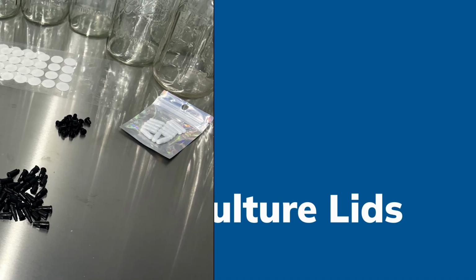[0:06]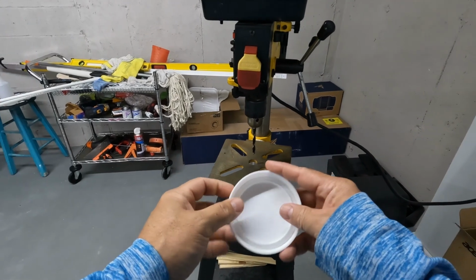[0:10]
We're going to be doing some liquid culture lids. These are all the materials you're going to be needing. I will include those in the description.
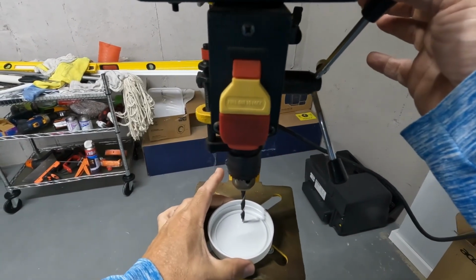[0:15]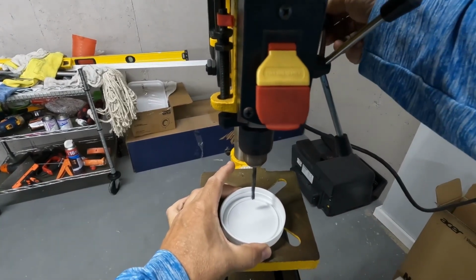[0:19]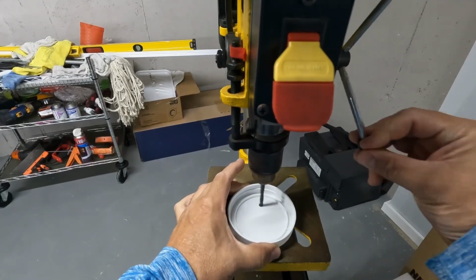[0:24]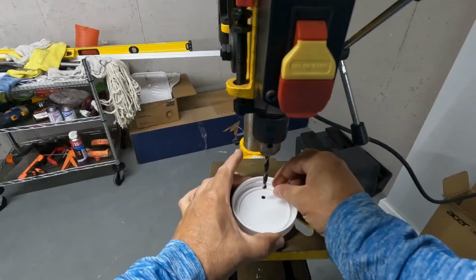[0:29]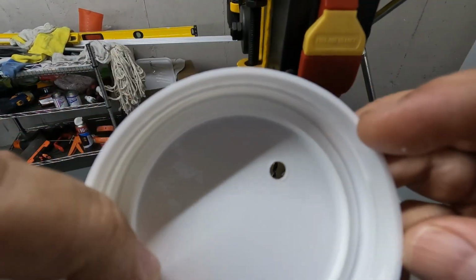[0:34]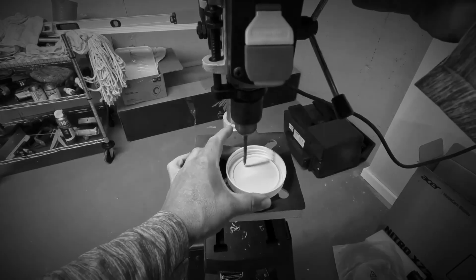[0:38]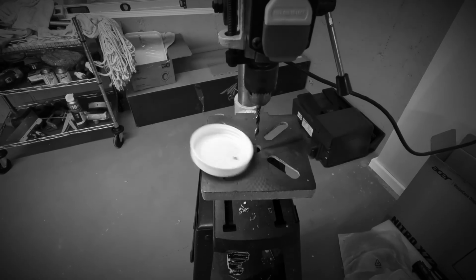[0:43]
We start by drilling the bigger holes, which are going to be for the injection port and for the little filter pad. We don't need a bench drill press to do this. You can do it with a regular hand drill. We just have this one here on site, so it makes it a lot easier. Always make sure that you, in between, inspect everything and remove any debris so you don't get anything in the way, especially because it's plastic. And make sure that you have a good grip on the piece, whether it's a manual or bench drill.
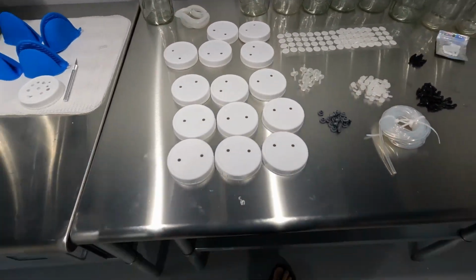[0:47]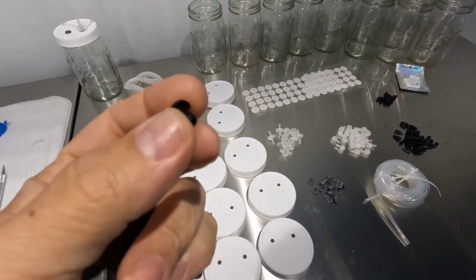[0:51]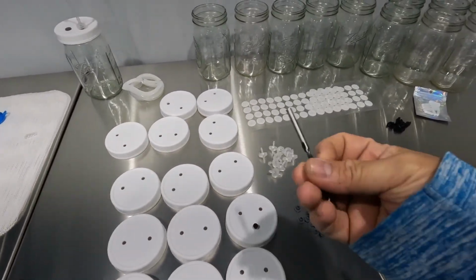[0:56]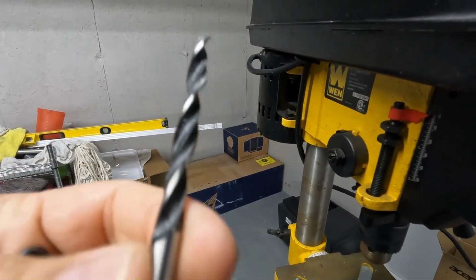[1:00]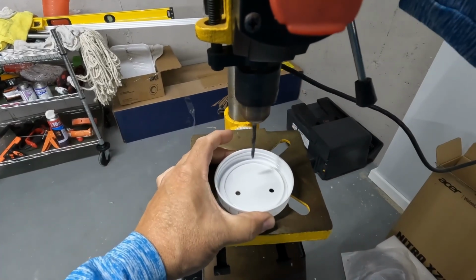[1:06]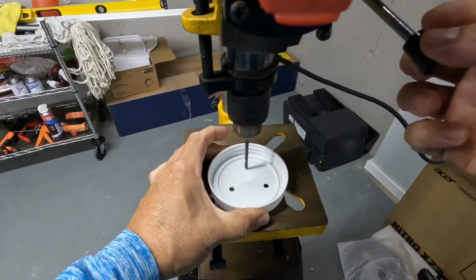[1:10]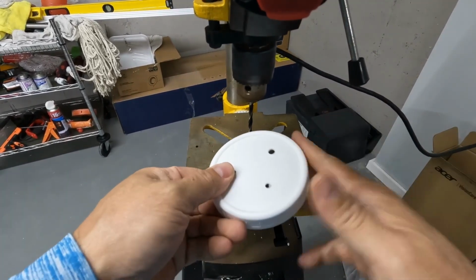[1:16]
With them all completed with the bigger holes, now we have to change our drill bit. We're going to do the one for the grommets that are used for the little valve we're going to put in the way. So we use two drill bits in the whole project. One is going to be for the filter pads and the other one for the line itself. I tend to put those in a kind of triangle configuration so that we have some separation between them. That's really just a matter of preference.
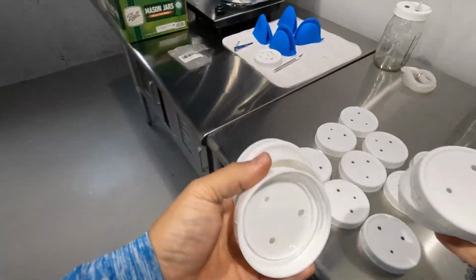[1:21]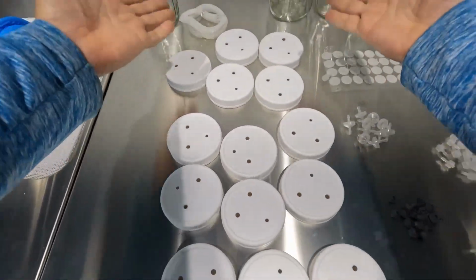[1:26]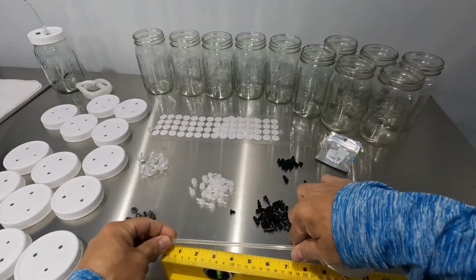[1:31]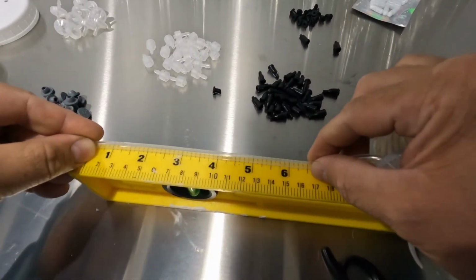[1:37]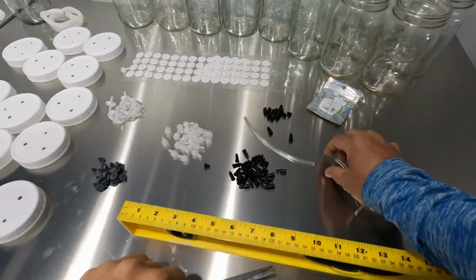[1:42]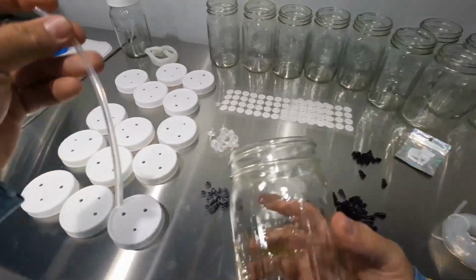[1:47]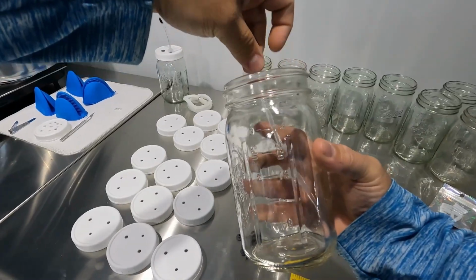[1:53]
Then, with them completed, we can now start doing the assembly process. We have all of our parts. I tend to put all the pieces on one table and then just assemble there. The hose that we use is heat resistant. It's a silicone hose, and I cut this piece about 6.5 inches. That allows us to connect to the lid and have enough to go to the bottom of the jar, without having too much slack and actually plugging itself, right? That you have too much slack on the bottom.
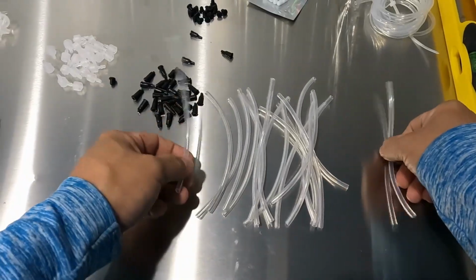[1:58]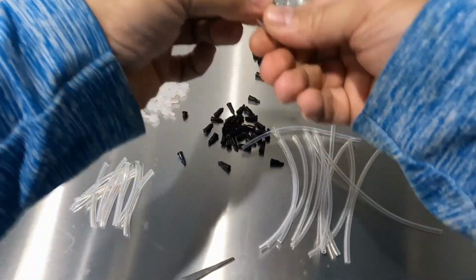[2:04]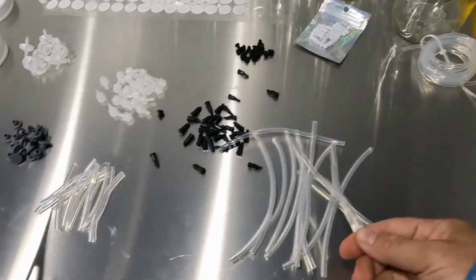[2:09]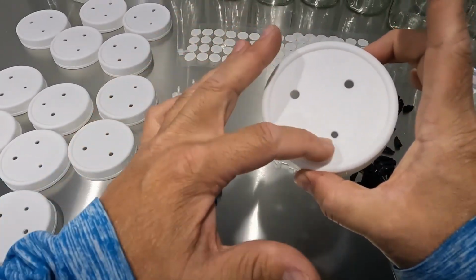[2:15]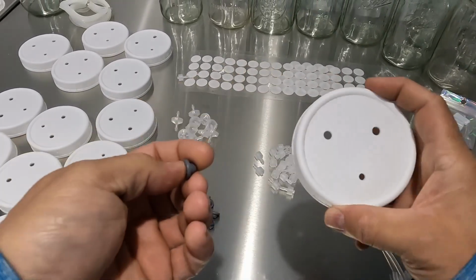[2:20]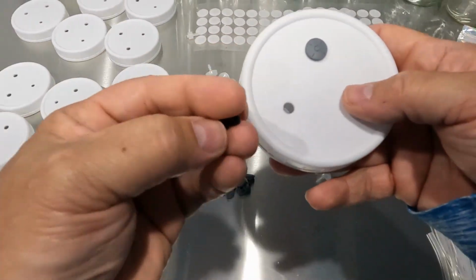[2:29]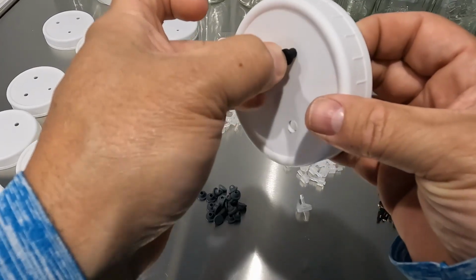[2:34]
Those same pieces that we use for the lid on the inside, if we cut them in half, I think they're a really good size to then use for the piece that's going to be on the outside of the lid. That's the part that is going to have our Luer lock adapter to actually connect syringes onto. So now you can see these are self-healing injection ports. And again, I'll put all the links in the description. So with a lot of patience, you can go through all of those and put all the grommets in there. The filter patch will be the next one. I leave the filter patch to the very end as I'm working and touching things. Those are a little bit more delicate.
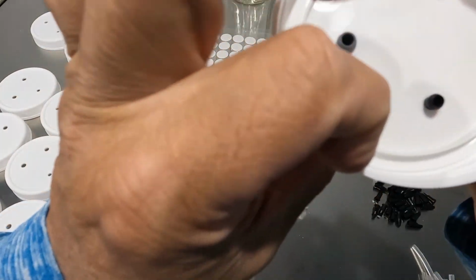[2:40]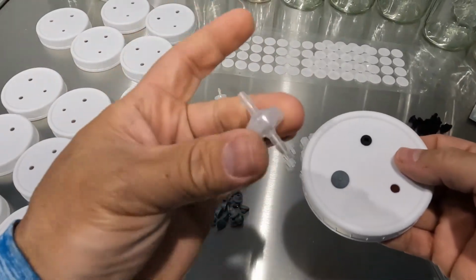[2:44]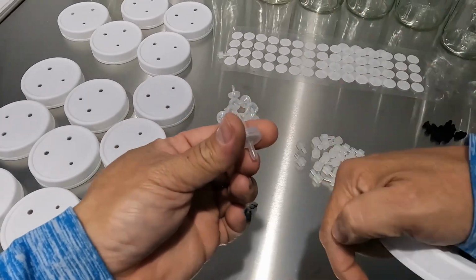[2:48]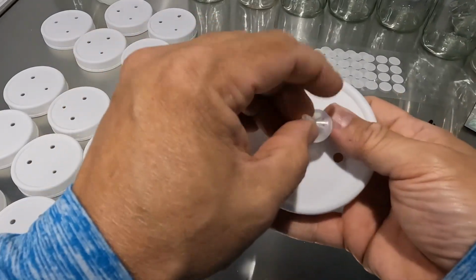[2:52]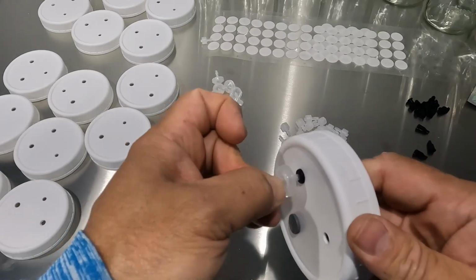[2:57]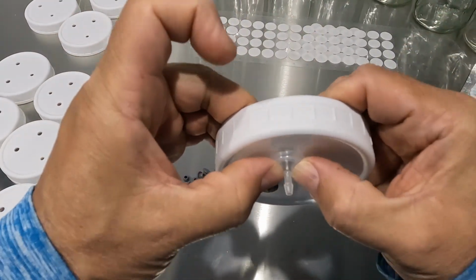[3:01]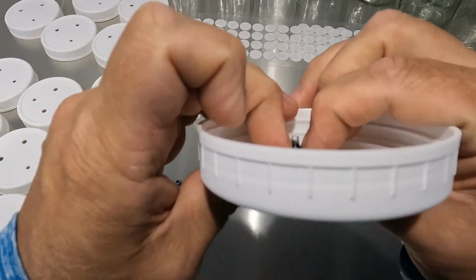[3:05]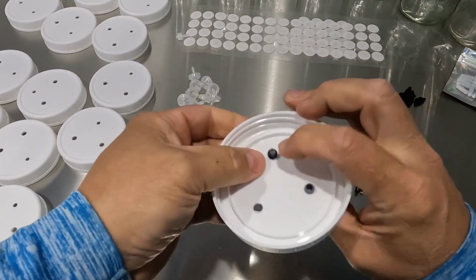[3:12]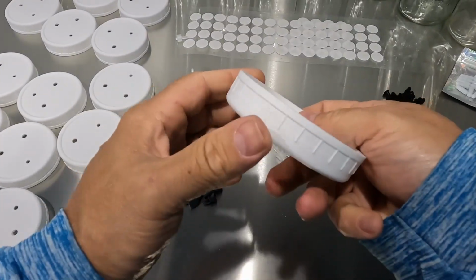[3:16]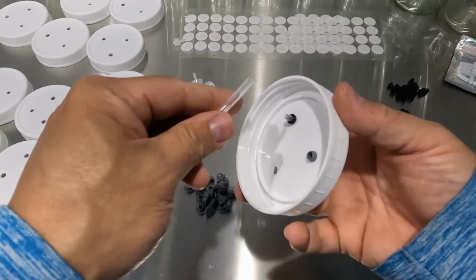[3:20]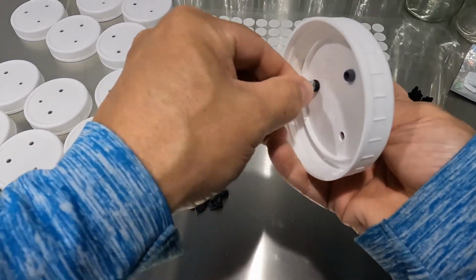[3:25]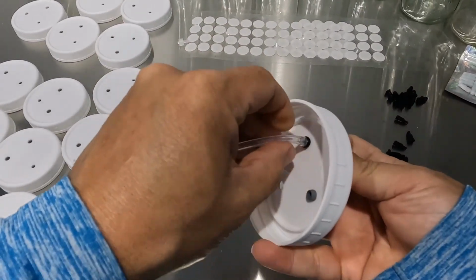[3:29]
And then the next piece is going to be that one-way piece that allows liquid to go out, but nothing to go in. If you insert those right there through the grommet, it's a really nice snug fit. And then on the inside, you'll see that you have a little bit of a sleeve that is created by the grommet itself. And we're going to pull that back, and that's actually going to serve a purpose. It's going to further seal that grommet in place on the inside. So now when we take our piece of silicone hose and put it on the inside, it's going to push that back and create a really nice seal.
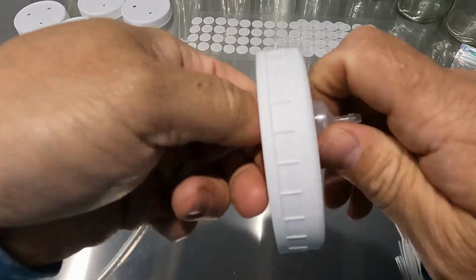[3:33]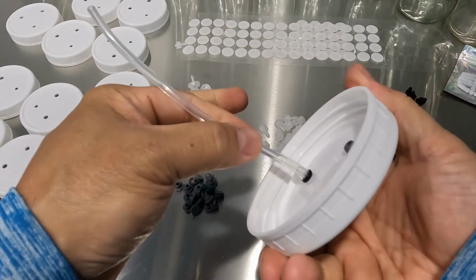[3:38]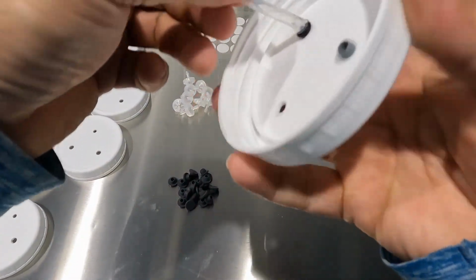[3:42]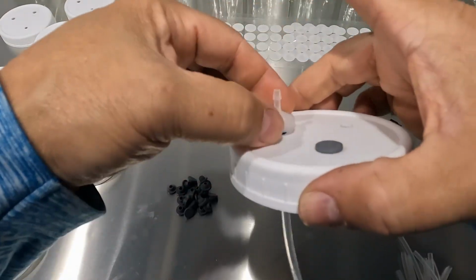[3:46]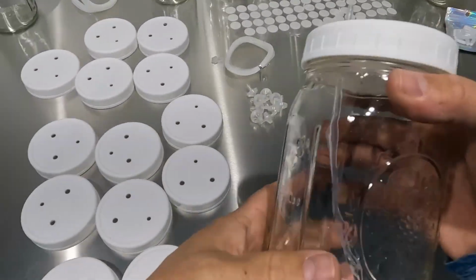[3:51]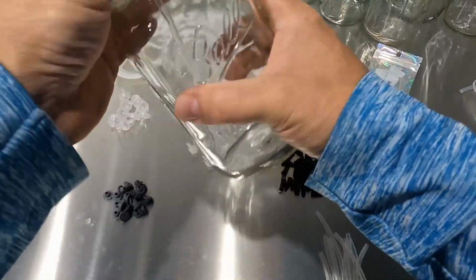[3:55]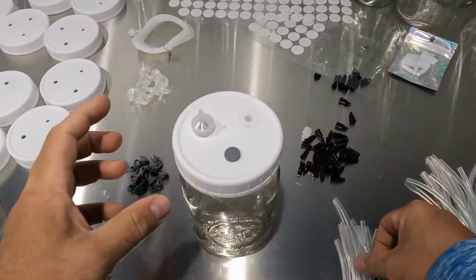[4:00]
All these parts are really creating a good seal so you don't have any liquid or air or any contamination there. And as you can see, they're pretty firm. I can tug on it, pull on it, and we know that they're not going to go anywhere. And they have a good seal also when we go into our autoclave. So this is what the completed jar looks like in terms of how it fits. So now we can proceed and do the other pieces, those smaller ones that we cut.
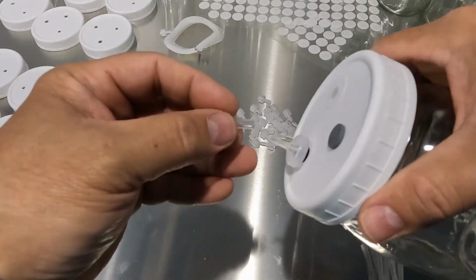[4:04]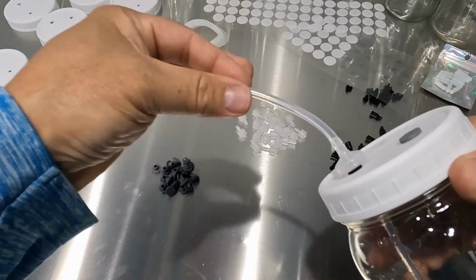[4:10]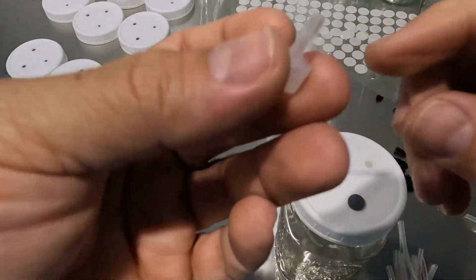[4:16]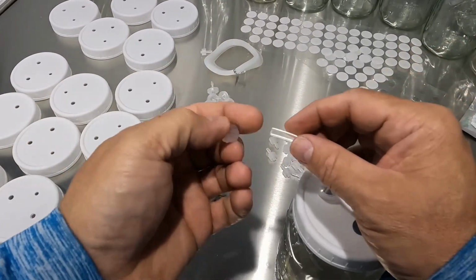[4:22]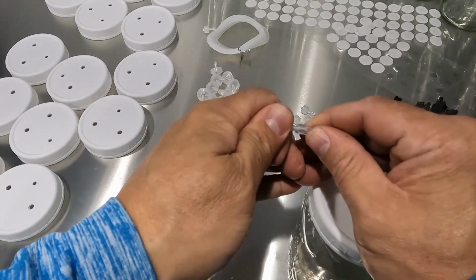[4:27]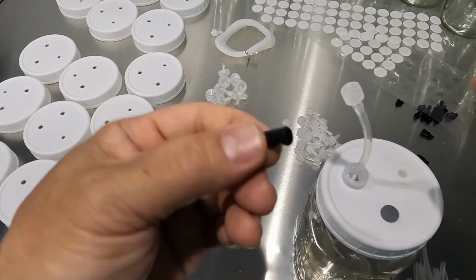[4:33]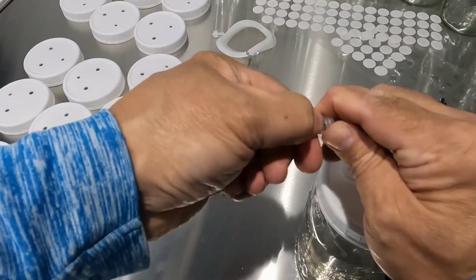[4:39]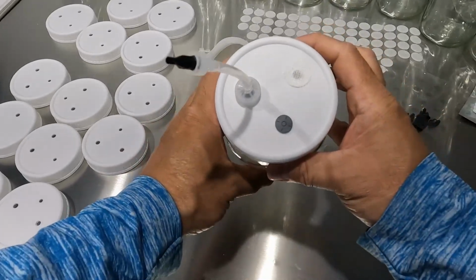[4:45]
That's going to be for that one-way gate valve that we have there, which is going to allow us to extract liquid with nothing contaminating coming in. This is a Luer lock barb fitting. This one would go then on the end. Then at the end of this, I like to use the caps, to make sure that nothing gets in there. And it's the same caps that we use on syringes. So we buy them in high quantity and just have them handy, whether for syringes or for these ones.
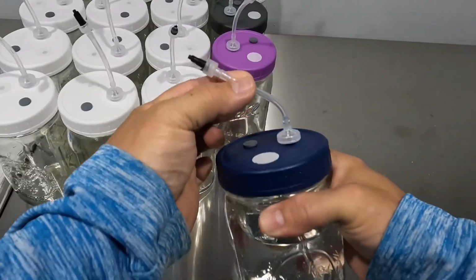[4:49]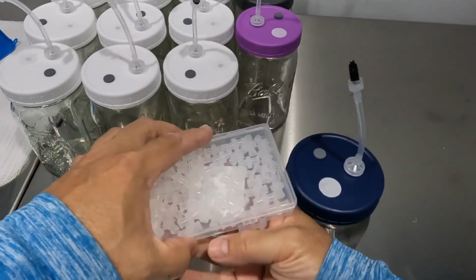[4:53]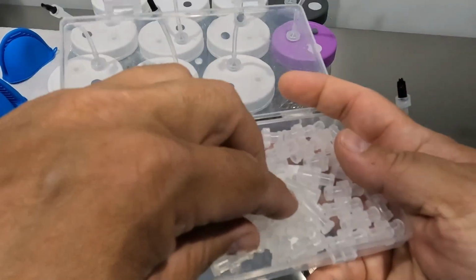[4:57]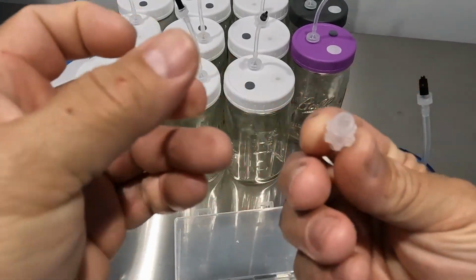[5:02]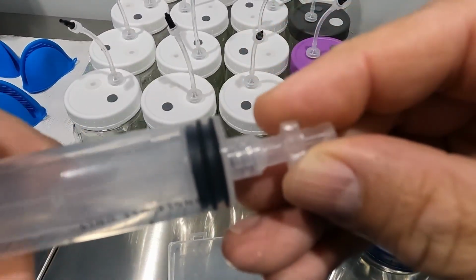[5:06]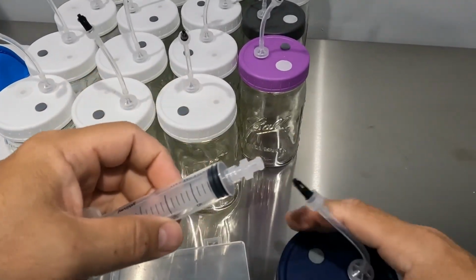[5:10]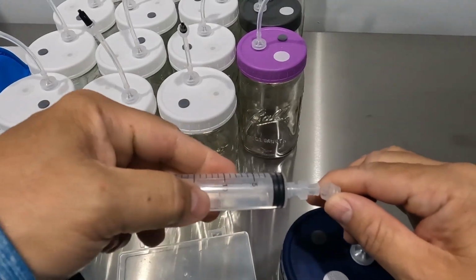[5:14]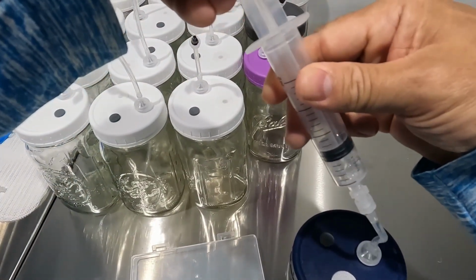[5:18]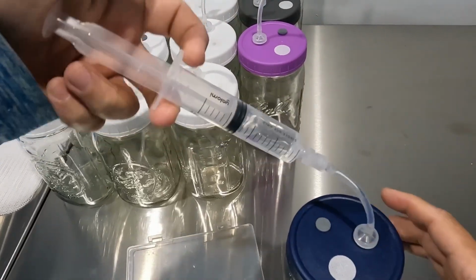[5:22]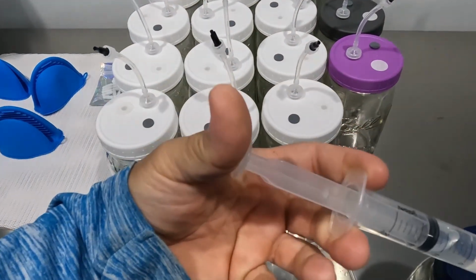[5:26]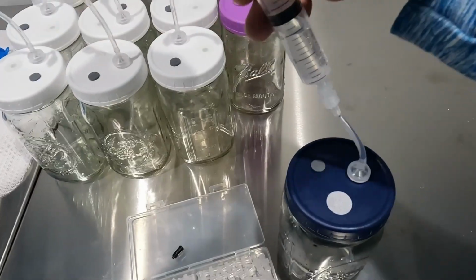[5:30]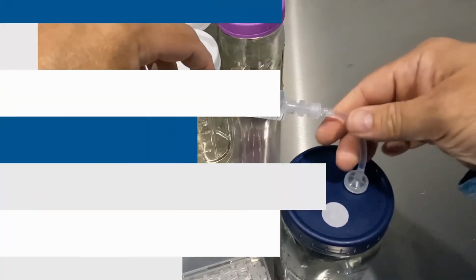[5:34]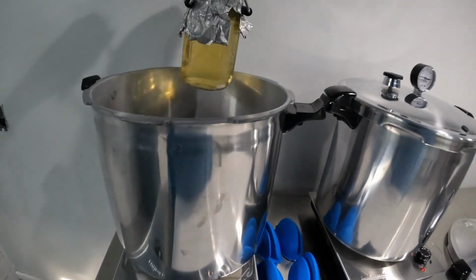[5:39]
Now here's one that I put some water in just to show you how we would actually use it. We have these Luer lock couplings, and what these enable you to do is essentially connect two syringes, one to the other. So if you ever had a need for that. In this case, we're going to use it to connect to the syringe, whether it's a 10 milliliter, 20, whatever size you prefer, and then connect that onto that port after removing the cap, and then you can easily extract liquid. The valve in between, as you can see, I'm trying to push liquid back in, and it doesn't really allow me, which is great. So we know that we are going to reduce the risk of contamination there. Obviously, when we do all this, we'll sanitize, we'll use alcohol, make sure that everything is nice and clean.
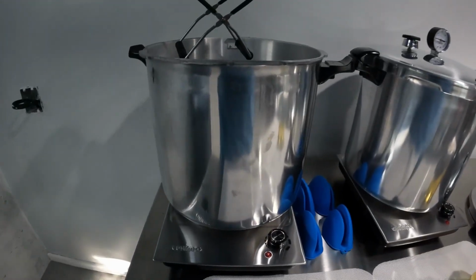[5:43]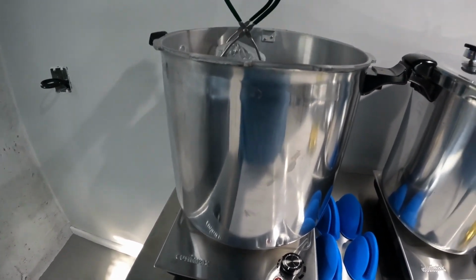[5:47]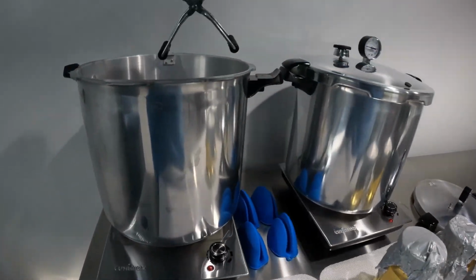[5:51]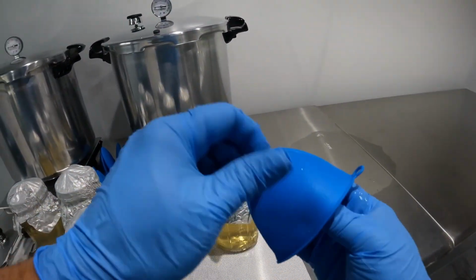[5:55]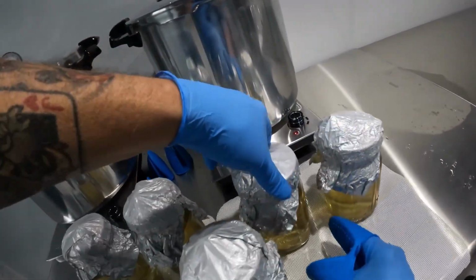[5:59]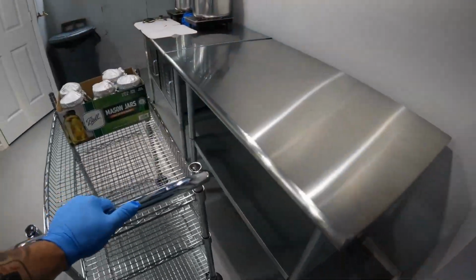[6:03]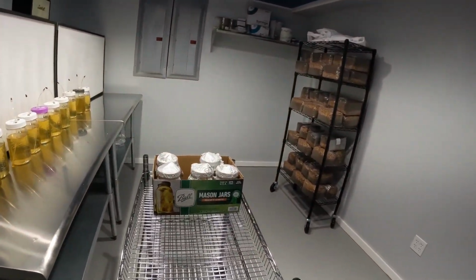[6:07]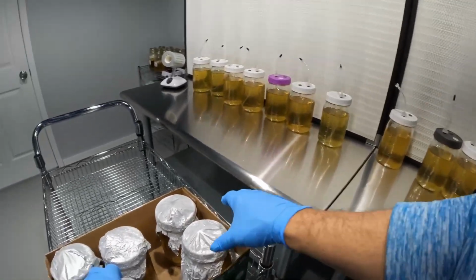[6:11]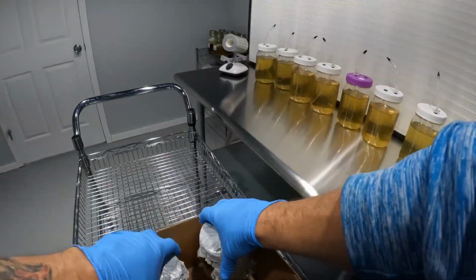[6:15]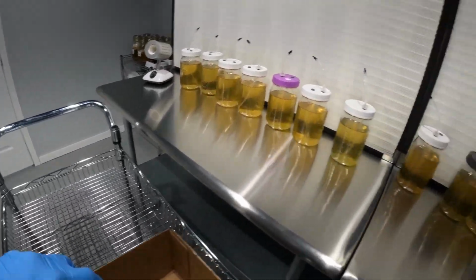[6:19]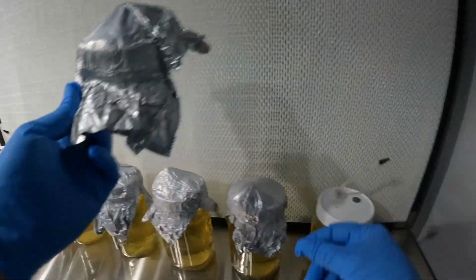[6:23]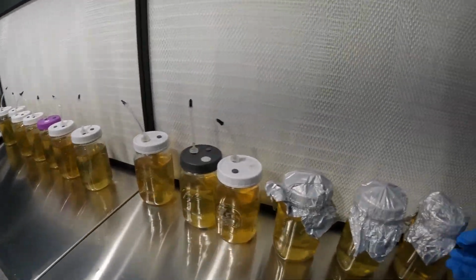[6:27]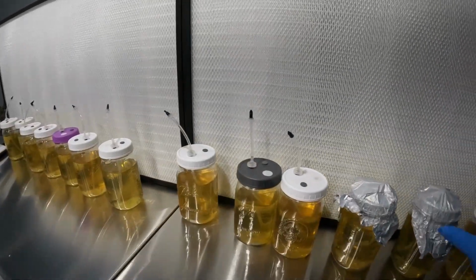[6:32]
All these pieces are heat resistant, so I'm just showing you here when we pull it out of our pressure cooker, which we are doing about five at a time, is what we can fit. They have come out pretty hot. So the first thing that I like to do is make sure that I tighten those caps back. We left them a little bit loose, with a little bit of air, before we put them in there. And now we take them into our clean room. I keep them covered with the foil as much as I can, all the way until I'm bringing them into the clean room. And then once we have them in front of the flow hood, we remove that and they can cool down. And typically I just leave them for about 24 hours before we do anything.
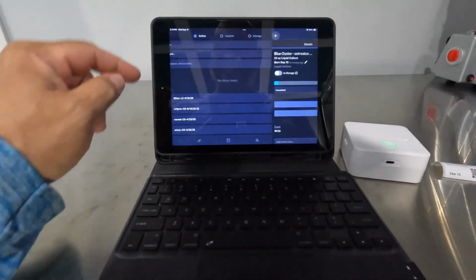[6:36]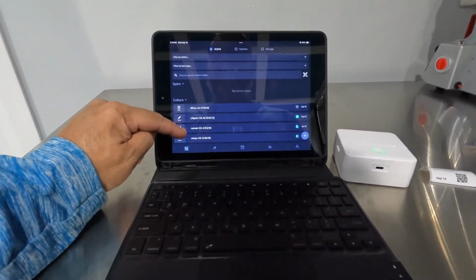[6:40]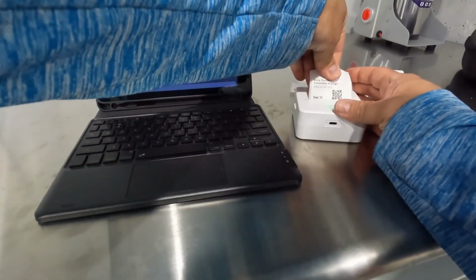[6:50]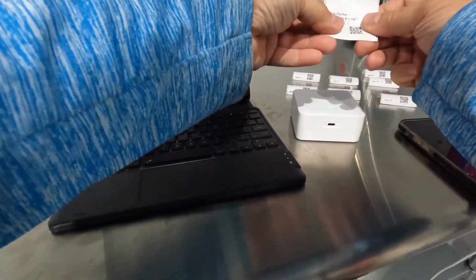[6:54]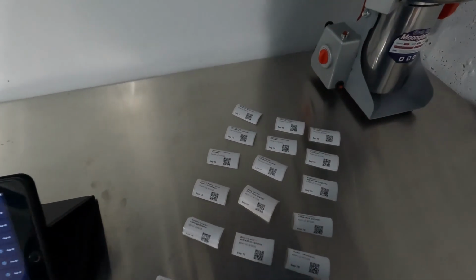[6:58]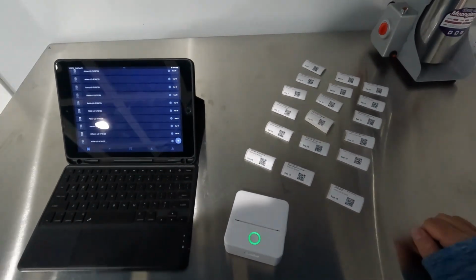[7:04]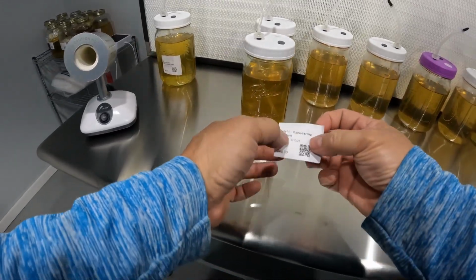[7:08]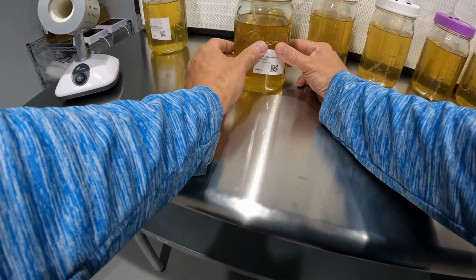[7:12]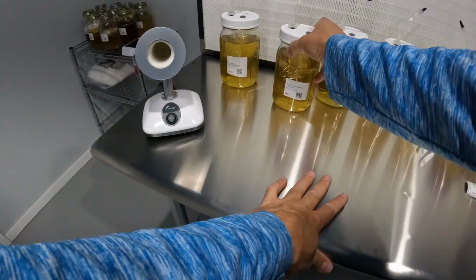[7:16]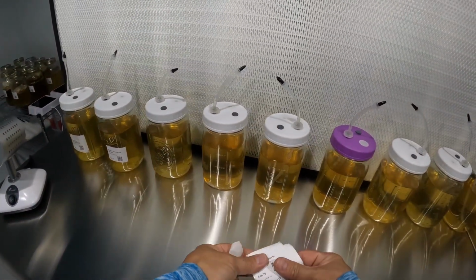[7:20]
While that's cooling down, we use Microfile. So shout out to the guys of Microfile. We pretty much run everything and catalog all of our spawn and cultures and even our fruiting through there. It's very easy to just create the QR codes and create the labels for whatever you're doing, in this case, for the liquid culture. So we're going to be doing about 18 different cultures in this batch. And in my workflow, I like to create the labels first, and then I will go on to inoculating one by one based on what the label says, and that really reduces any confusion and any mix-ups there.